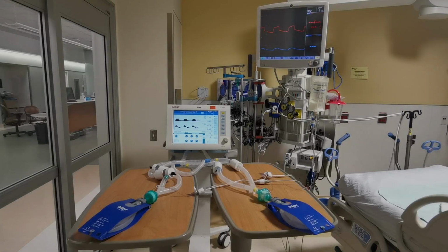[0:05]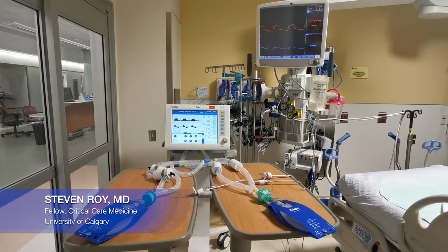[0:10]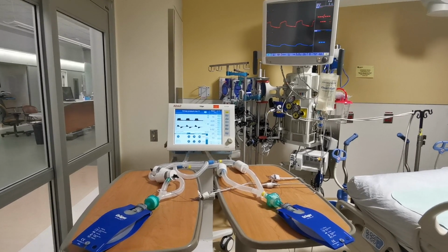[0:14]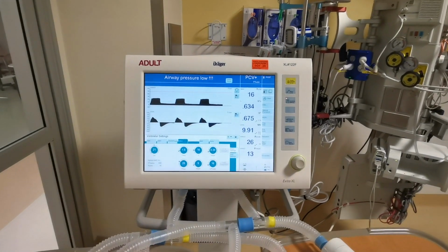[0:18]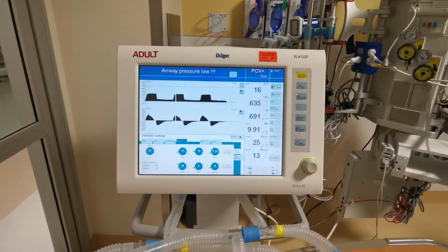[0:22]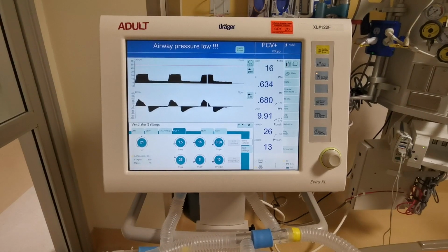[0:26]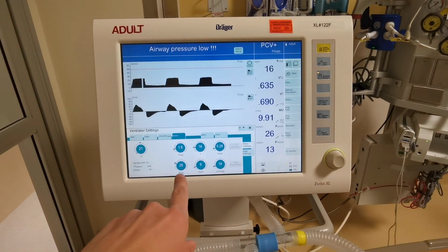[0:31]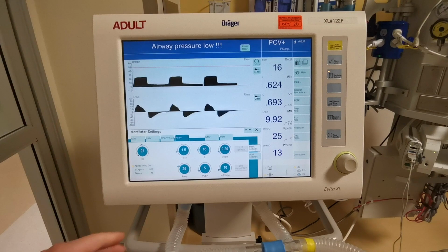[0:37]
Just going to show you this differential multiventilation setup so that you can build one to allow for more safely ventilating multiple patients with a single ventilator. So starting at the ventilator and working our way back, you can see that on our ventilator, we have an inspiratory pressure set to 25 centimeters of water and a PEEP set at 5 centimeters of water.
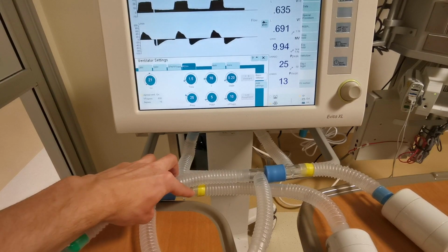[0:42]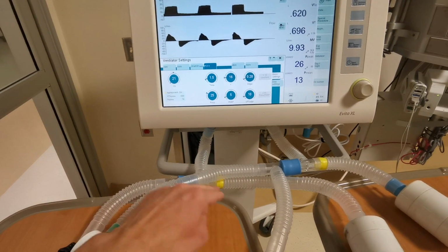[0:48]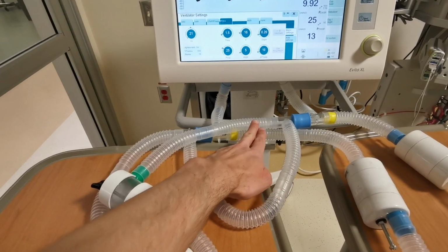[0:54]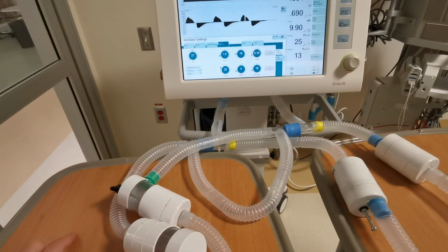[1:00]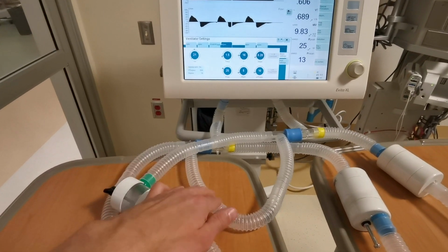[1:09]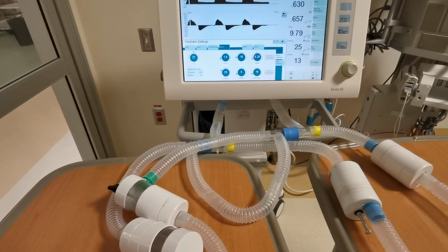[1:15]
In our inspiratory circuit here, it's divided with a T adapter. The T adapter goes to our two patients, our test lungs, our yellow patient and our clear patient. There's also another T adapter that connects the inspiratory and expiratory ports of the ventilator, and that allows the bias flow and normal behavior of the vent when the pressures are modified in the individual circuits. Without this section, and many systems do not have this section, there is much less predictable behavior of the ventilator in response to these individualized circuits.
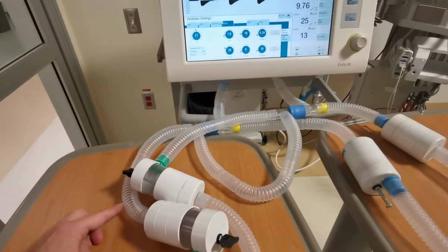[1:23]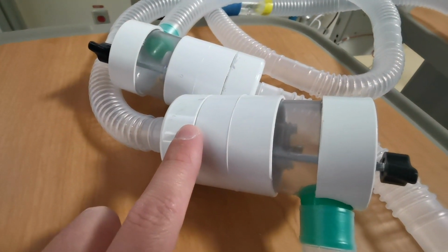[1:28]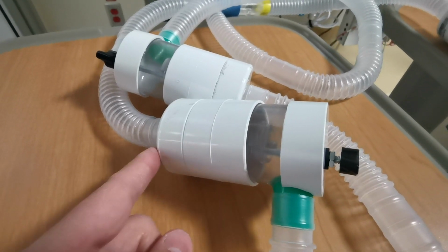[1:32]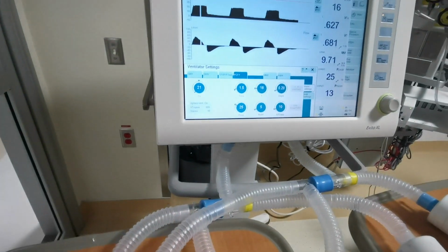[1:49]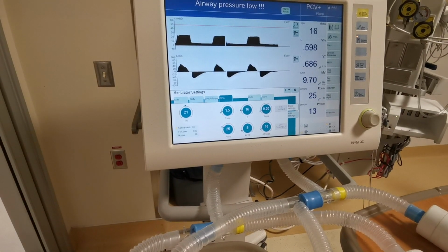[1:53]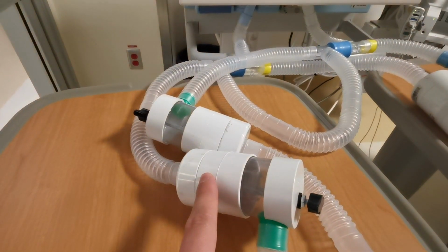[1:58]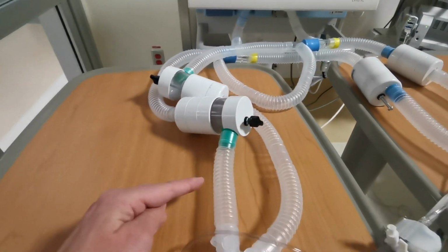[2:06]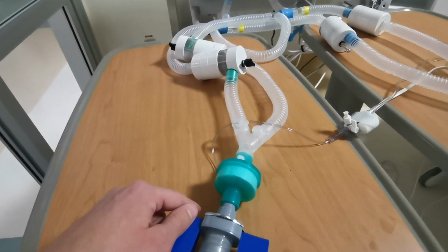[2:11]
Next, we have the first patient's inspiratory circuit. It goes to a PEEP valve enclosure. You can see the PEEP valve inside of the enclosure. This inline PEEP valve enclosure allows us to set the inspiratory pressure independently for the patient. So here we have the pressure in the PEEP valve enclosure set to 10 centimeters of water, and that's subtractive from the 25 centimeters of water on the ventilator. This resists flow by 10 centimeters of water, so the patient receives 15 centimeters of water instead of 25. Following this to the patient, we have the patient, or our test lung in this case, and a manometer.
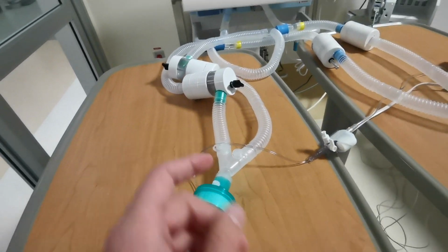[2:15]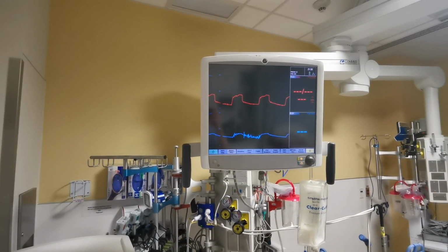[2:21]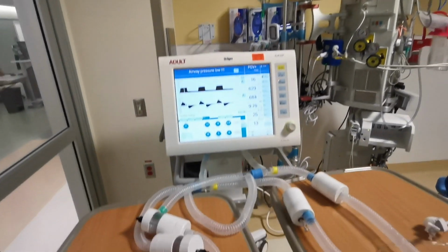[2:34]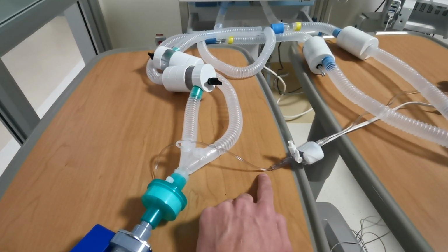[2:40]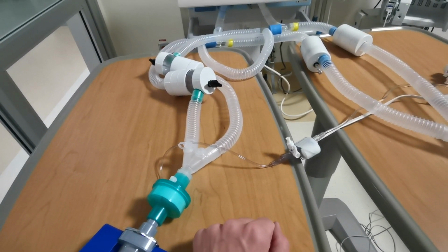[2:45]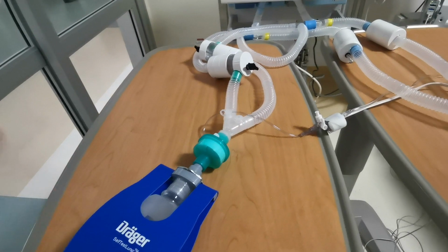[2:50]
The manometer can either be a digital manometer, which we can see here on the screen, for two different patients. The patient on the left in the blue and the patient on the right in the red. This can be displayed in millimeters of mercury rather than centimeters of water. Alternatively, you can use an ET tube cuff manometer, and that will have a dial and can be used as an alternative and is in centimeters of water. However, it doesn't give you the waveforms, and here I just wanted to demonstrate the difference in waveforms.
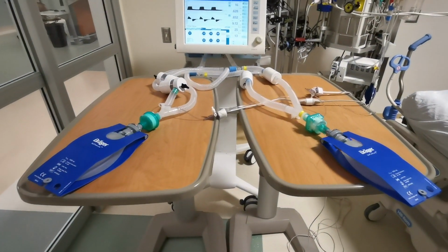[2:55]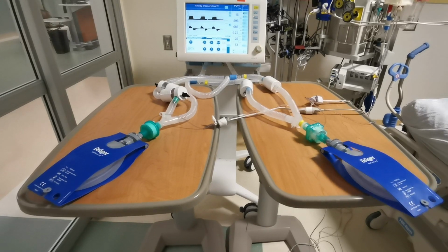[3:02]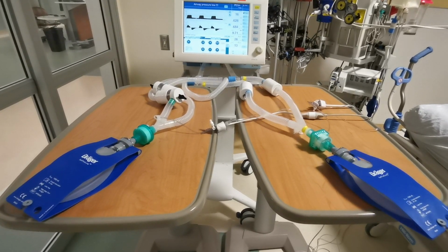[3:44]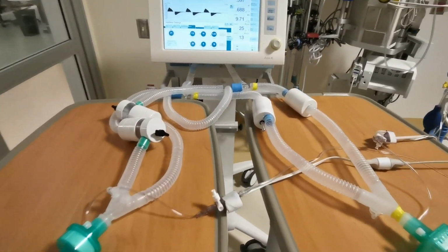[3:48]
So our two test lungs, the one on the left is getting an inspiratory pressure of 15, and the one on the right is getting an inspiratory pressure of 25. You see that the volumes are proportional, as you would expect. And they are also getting different PEEP pressures. So you can see that the PEEP on the left is 10 and the PEEP on the right is 5 centimeters of water, and the effect that has on the test lungs. So these two simulated patients are getting completely different settings, and those settings do not interact and are independent of each other because of the PEEP valves and the bias flow circuit, which are critical to this setup.
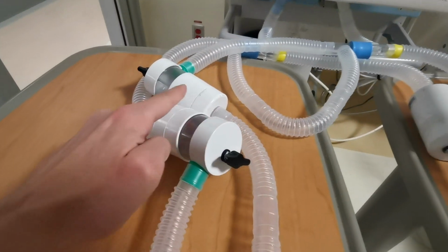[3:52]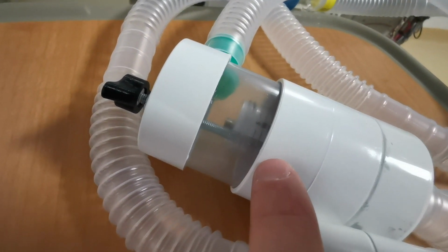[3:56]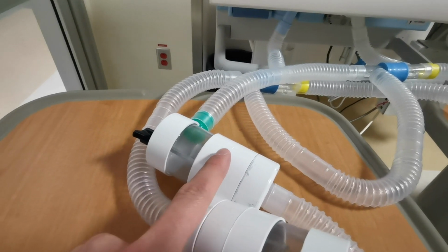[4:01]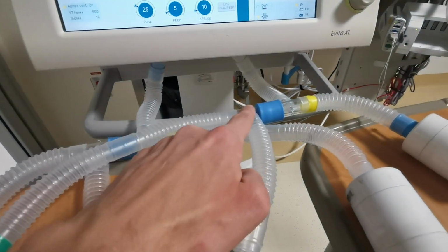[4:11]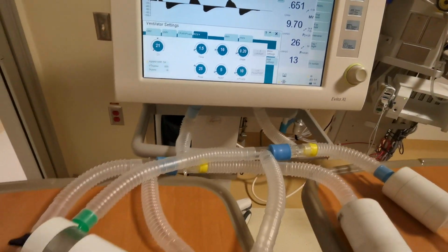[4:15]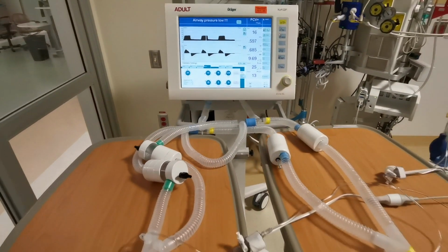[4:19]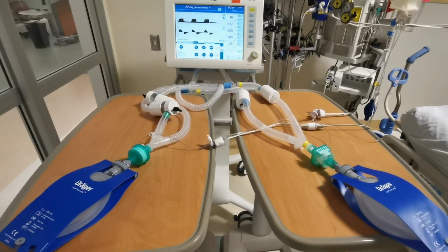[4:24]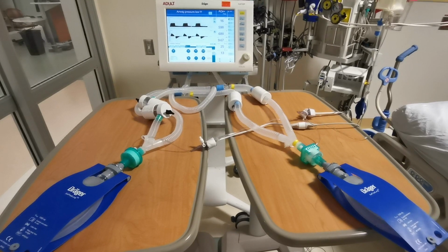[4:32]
Following the expiratory limb back, we have another PEEP valve enclosure. We can see the PEEP valve in there. It's set to 5 centimeters of water, so it's resisting flow before 5 centimeters of water accumulates in the expiratory circuit, and then the flow directed out of this goes to the vent and is again resisted by 5. So 5 plus 5, we get 10 centimeters of water, and hence our 10 centimeters of water of PEEP for the patient on the left, compared to our patient on the right, which has a PEEP set on the expiratory valve there of 0, and so it ends up being just the 25 of inspiratory pressure and the 5 of PEEP in the right test lung.